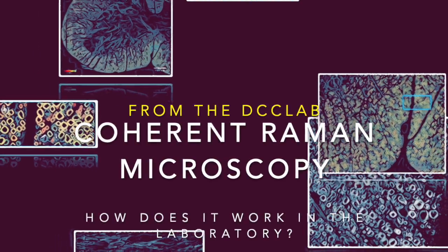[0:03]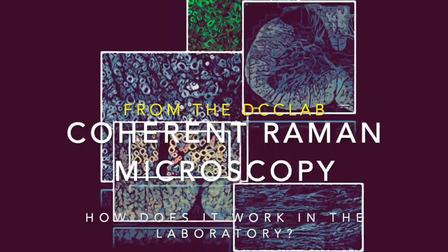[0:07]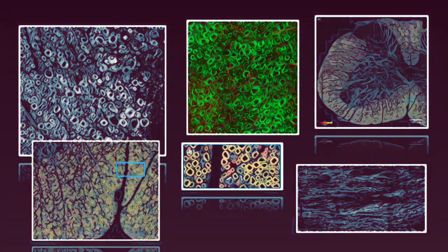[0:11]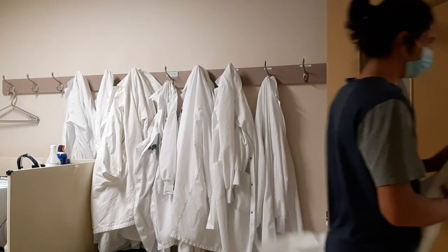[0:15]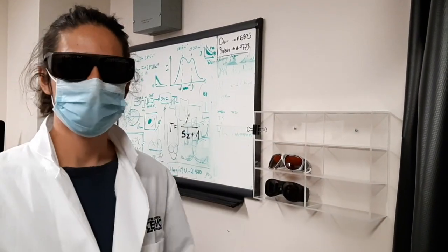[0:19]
In the DCC lab, we use Coherent Raman Microscopy to perform myelin imaging in live animals. This video will show you what's involved in setting up your own CARS microscope for myelin imaging. Let's go in the lab with Antoine, who will show us how to set up the CARS microscope safely.
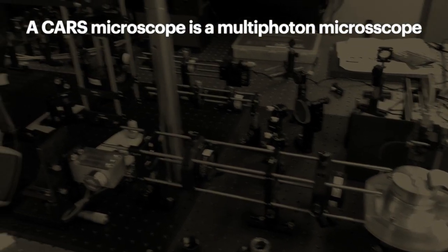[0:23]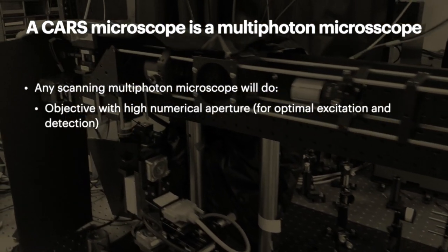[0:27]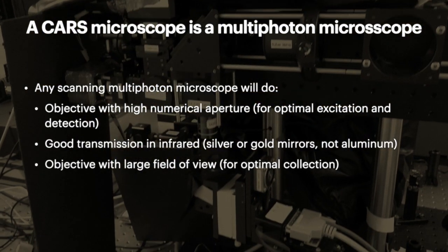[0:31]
A CARS microscope is a multiphoton microscope. Therefore, any scanning multiphoton microscope will do. So you'll need an objective with high numerical aperture, good transmission in the infrared, an objective with a large field of view, and non-descan detectors close to the objective. We use a video rate microscope based on a polygonal mirror scanner.
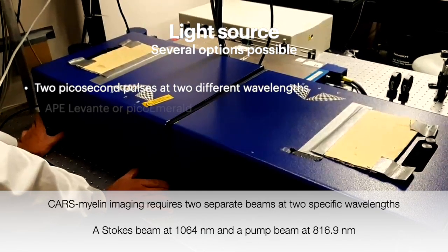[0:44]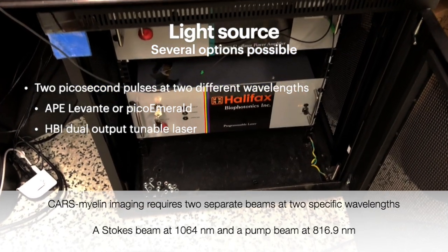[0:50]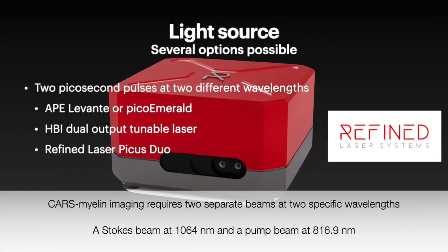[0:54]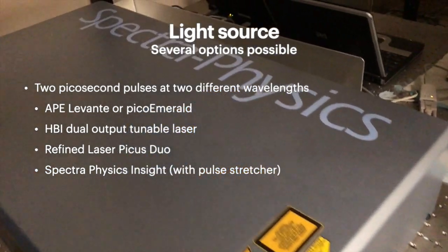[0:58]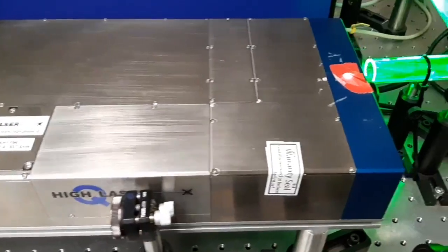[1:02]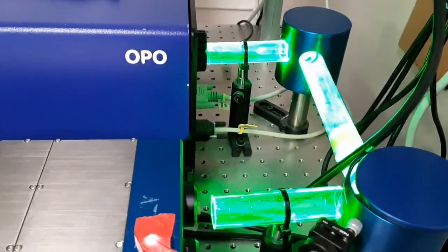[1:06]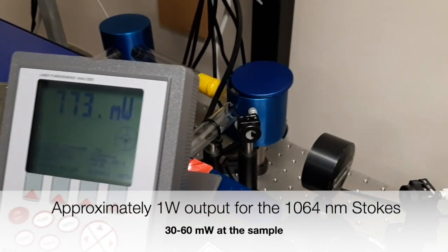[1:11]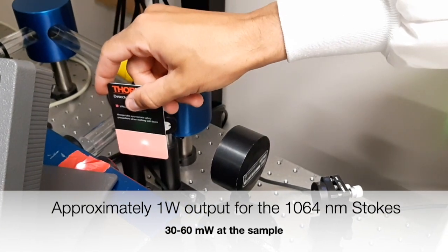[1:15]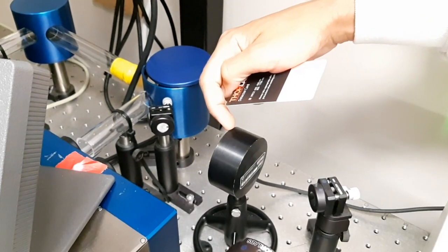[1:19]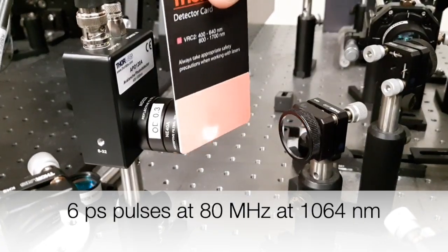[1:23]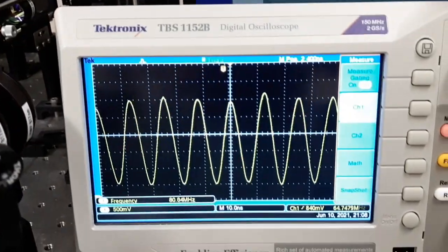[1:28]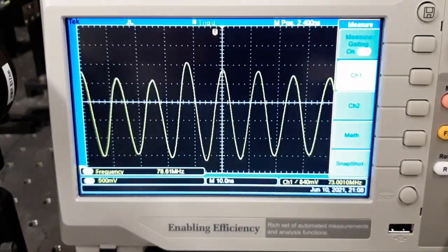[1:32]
The Picotrain pump produces an output at 1064 of approximately 1 watt, and only 30 or 60 milliwatts will reach the sample. The beam is made up of 6 picosecond pulses at a repetition rate of 80 megahertz. An avalanche photodiode will not resolve the 6 picosecond pulses, but it will be sufficient to show us that the pulses are indeed coming at a repetition rate of approximately 80 megahertz.
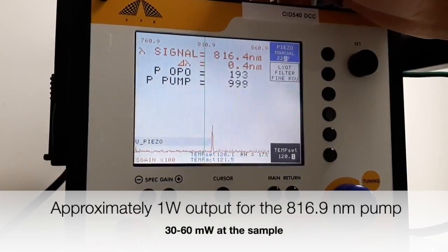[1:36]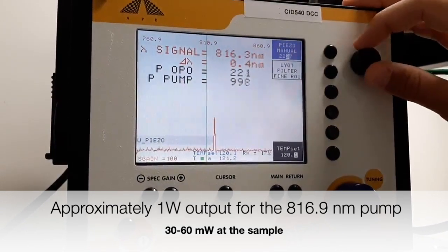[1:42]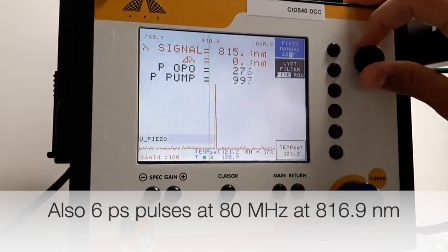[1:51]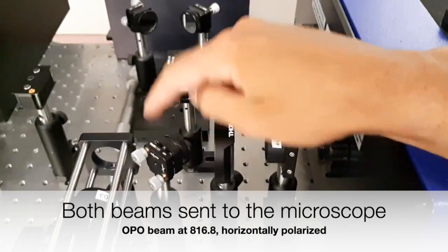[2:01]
The APE Green Levante is really made up of 2 lasers. The Picotrain pump at 1064, which we use as the Stokes beam for CARS, and the OPO, from which we get the tunable output that we tune to 816.9 and use as the pump signal for the CARS imaging of myelin. Both beams are sent to the microscope independently.
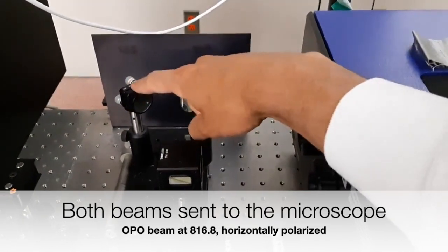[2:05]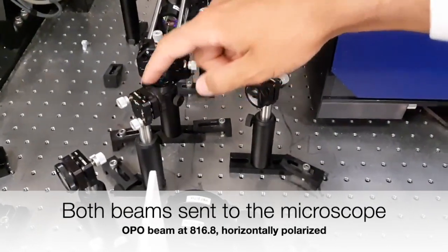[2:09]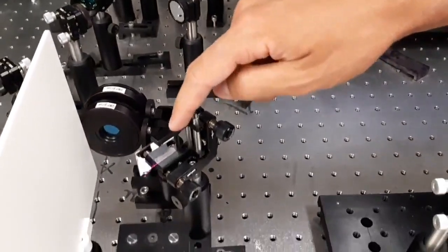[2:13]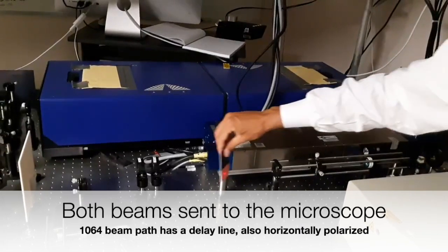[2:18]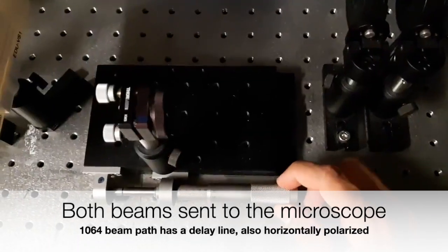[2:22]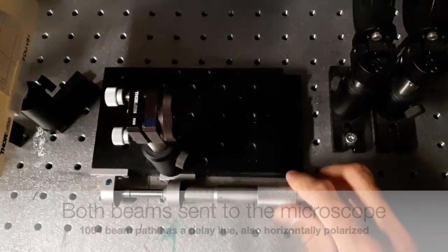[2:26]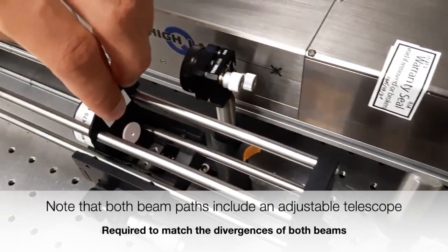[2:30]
The OPO beam goes through its own beam path with a 1-to-1 telescope adjustable for divergence and ends at a reflective dichroic mirror that will send it to the microscope. On the other hand, the 1064 beam path has a delay line, which we will use to overlap the pulses temporally, and also an adjustable 1-to-1 telescope to modify the divergence if needed.
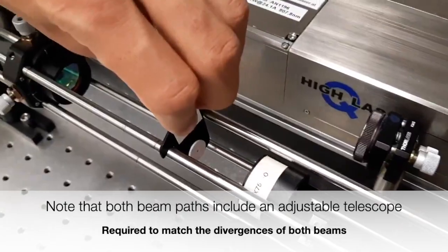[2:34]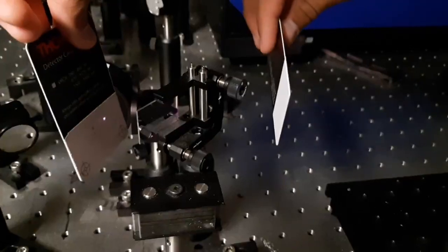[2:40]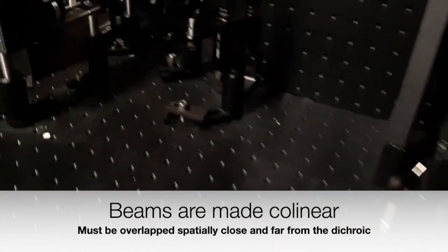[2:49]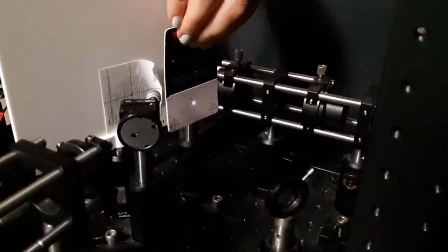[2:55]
The goal is to recombine the 1064 and the 816 beam at the dichroic so that they are collinear when going into the microscope. A quick check shows that if they are overlapped near the dichroic and overlapped far from the dichroic, they should be almost collinear. Almost collinear. Is that sufficient? We're talking about 2 pulses that are 6 picoseconds in length, that is only a few millimeters in space, that have different wavelengths, and that must focus through a high NA objective at the same place at the same time.
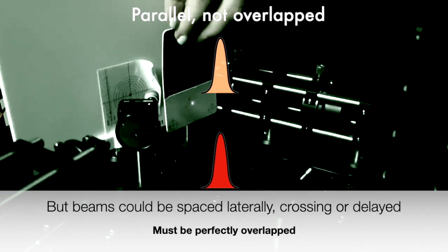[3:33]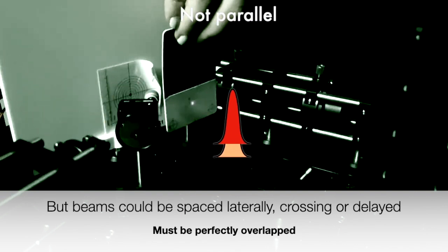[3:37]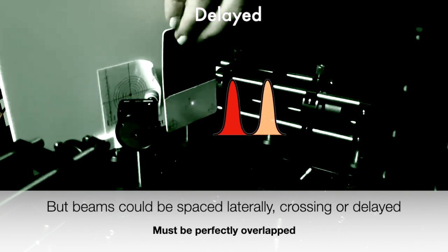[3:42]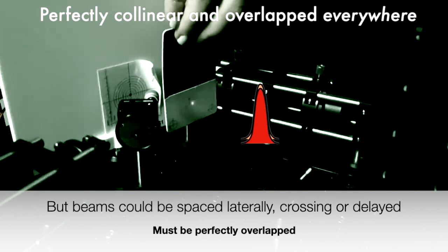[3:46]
How can we check that to make sure that we do get a coherent anti-Stokes Raman scattering effect at the focal plane where our sample is? The beams could be parallel but not overlapped. They could be crossing at some point in space, or they could even be delayed with one pulse being behind by a few picoseconds, and therefore no nonlinear effect would take place. We need the pulses perfectly collinear.
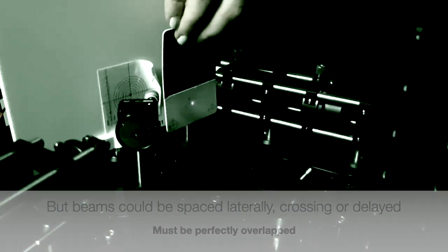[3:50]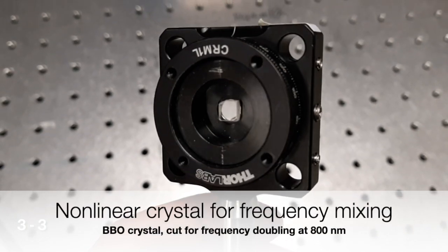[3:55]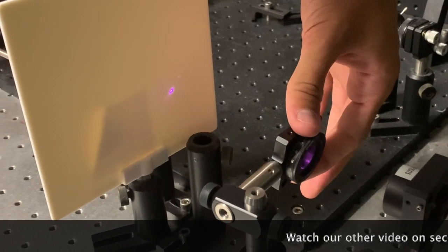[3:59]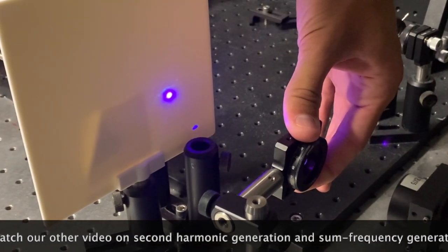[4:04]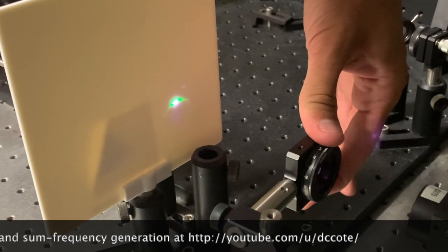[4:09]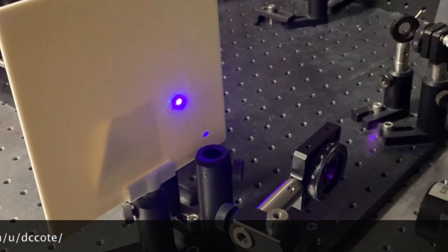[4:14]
For this, we will make use of a nonlinear crystal for frequency mixing. If we focus intense picosecond or femtosecond beams into a nonlinear crystal, we will get what's called a second harmonic generation beam. In this case, the 1064 beam will generate another beam in the green, and the 816 beam will generate another beam in purple.
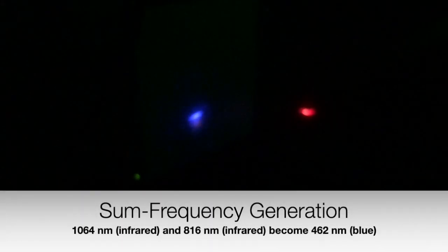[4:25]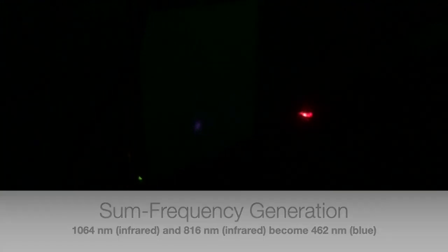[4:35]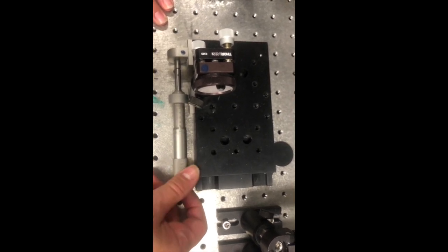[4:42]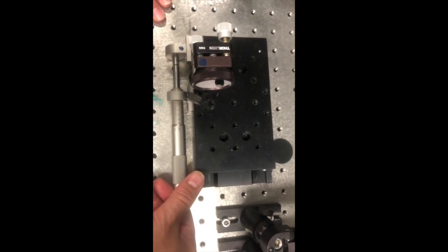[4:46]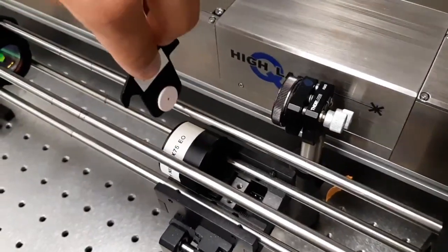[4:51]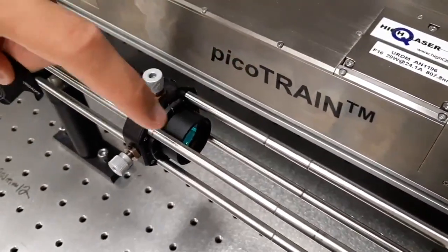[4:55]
By adjusting the orientation of the crystal, we can either double the 1064 to 532 or the 816 beam to 408 nanometers. It becomes interesting when both beams are spatially and temporally overlapped in the crystal, because in this case we will generate another color that we can use as a confirmation that both beams are perfectly collinear and temporally overlapped. We therefore adjust the relative delay of one beam as well as the divergences of both beams so that they are indeed overlapped in the crystal and generate a little bit of blue.
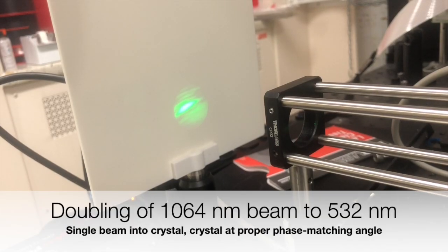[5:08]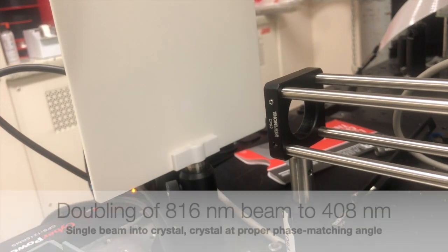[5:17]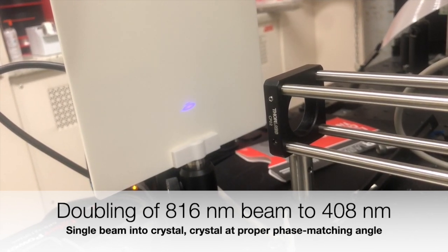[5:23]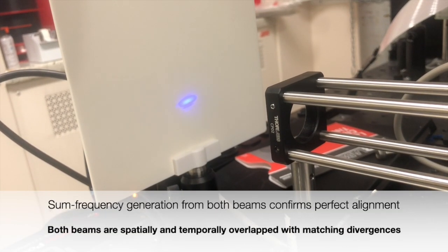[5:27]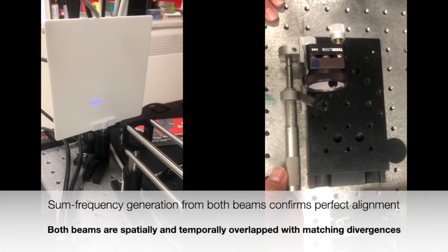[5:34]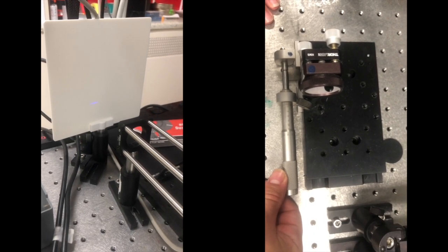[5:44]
Notice that the blue coming from sum frequency is different from the purple that we get from the doubling of the 816 beam. So we can get the doubling of the 1064 into 532 when the crystal is properly aligned at the proper phase matching angle. We can also get the doubling of the 816 beam, again, when the crystal is properly aligned at the right angle. However, this sum frequency will only occur when both beams are perfectly overlapped in the crystal. This blue beam will disappear if the pulses are not temporally overlapped, as we can check by changing the delay of one of the beams.
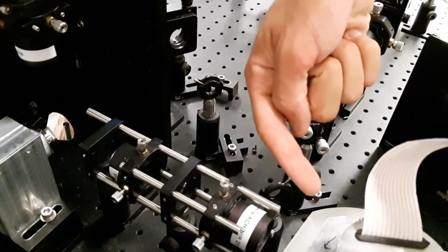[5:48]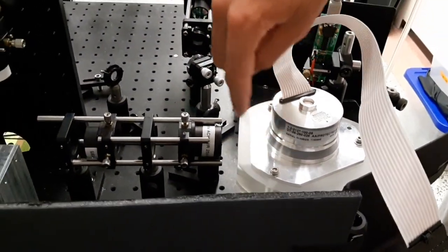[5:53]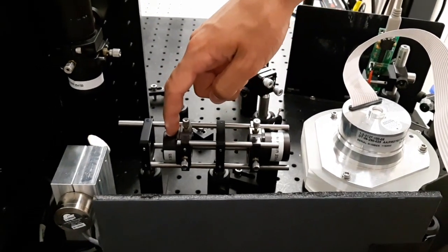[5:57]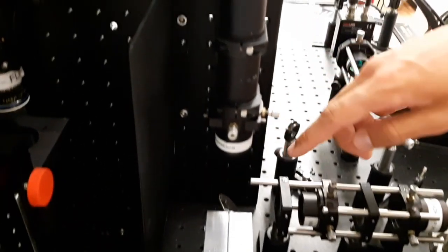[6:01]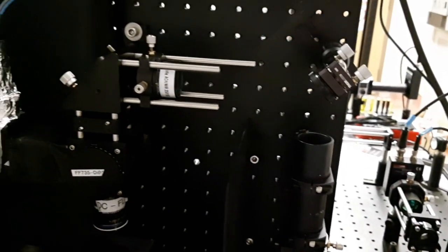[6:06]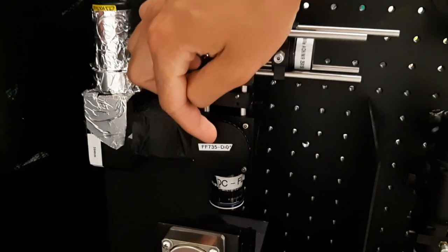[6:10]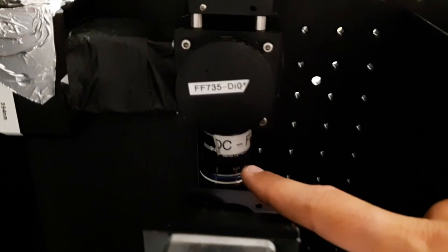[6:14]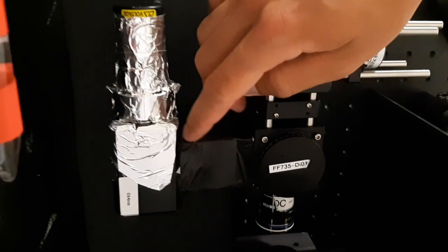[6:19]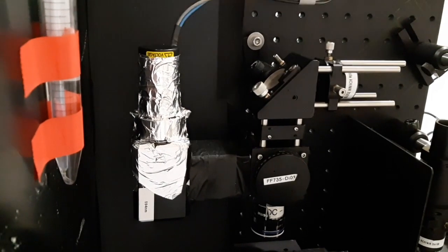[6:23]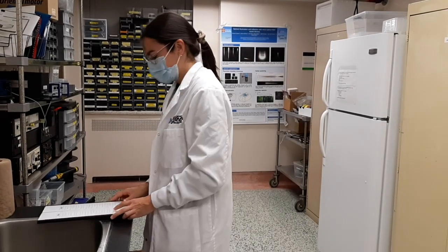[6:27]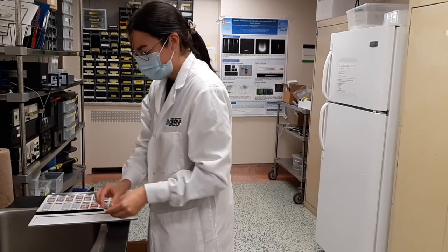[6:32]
It is only when both beams are perfectly overlapped that we can send them, just like a regular multiphoton beam, into our microscope. In our case, we send it to the polygonal mirror, followed by a telescope, and then a galvo scanner for the y-axis, and into the tube lens, then the objective, and the sample. Notice the non-descanned detectors are very close to the objective to maximize the collection efficiency. Just like any other multiphoton microscope, it is important to use very good blocking filters to avoid any leakage of the pump and Stokes beam to the detectors.
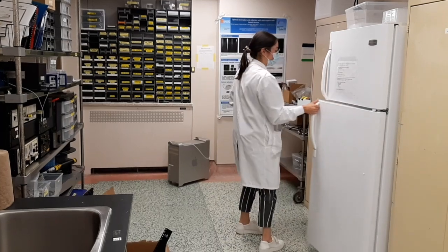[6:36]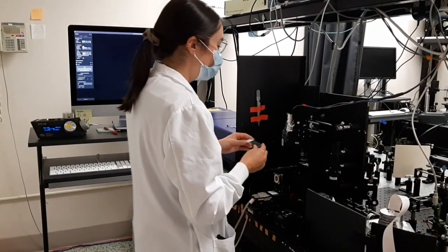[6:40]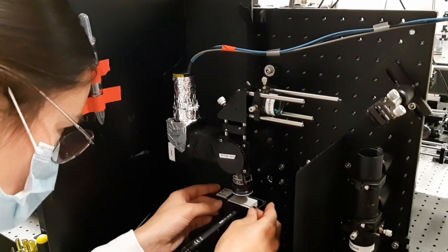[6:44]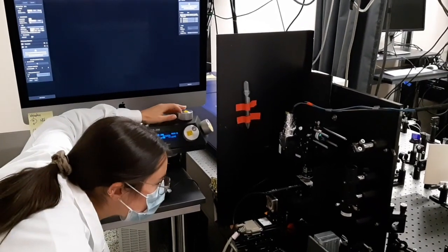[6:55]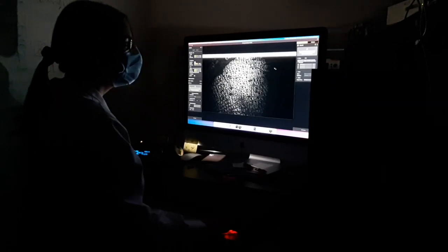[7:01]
Valérie will take samples to the microscope to show us images of their myelin. Just like a regular microscope, they go under the objective, which we use with a cover slip, a drop of water. We quickly find the focus, and then, for the safety of the microscope, we turn off the lights, turn on the detectors, and start imaging.